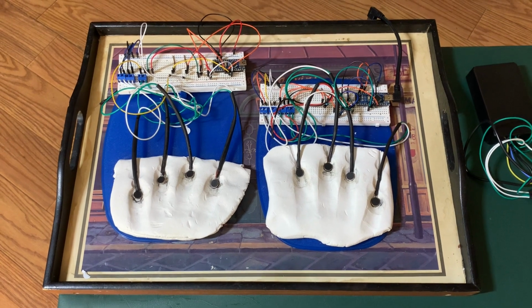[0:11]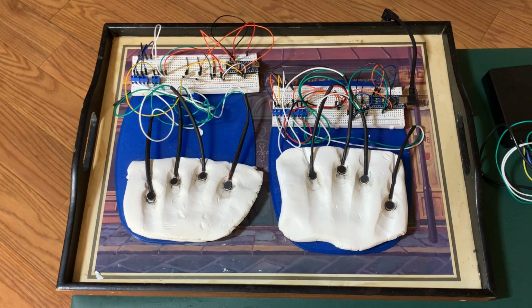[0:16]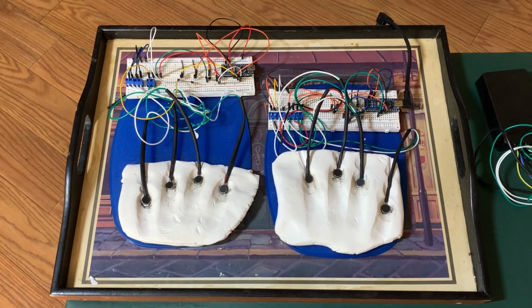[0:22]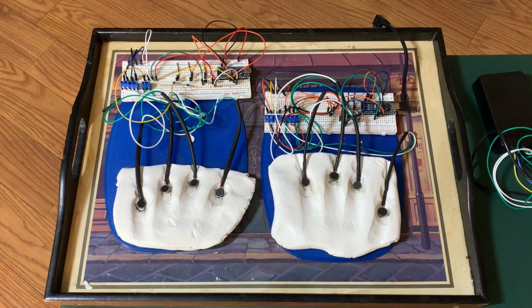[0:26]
My wife was diagnosed with Parkinson's disease approximately 4 years ago. Like many of you, we watched a Today Show piece regarding the research at Stanford University on the vibrating glove called vibrotactile therapy with great interest. Based upon this piece, I went to the Stanford University website and downloaded the research papers that had been generated regarding the creation of this capability.
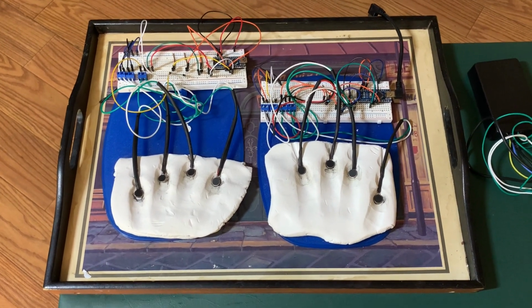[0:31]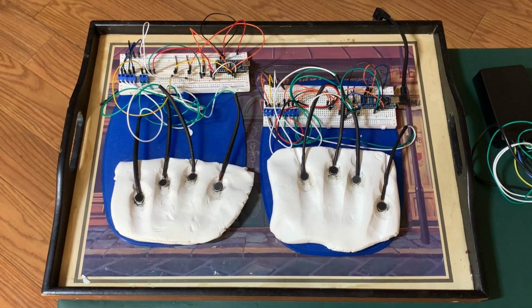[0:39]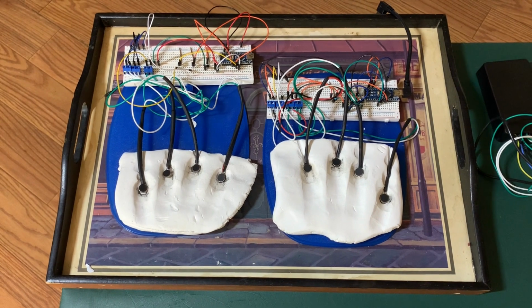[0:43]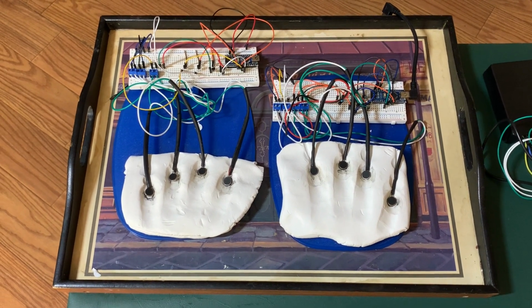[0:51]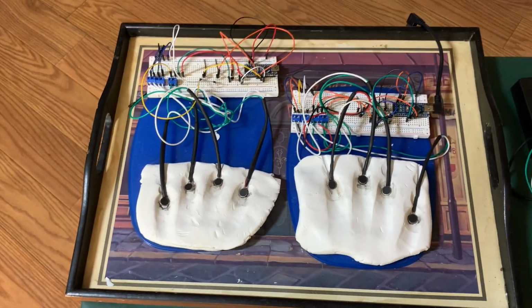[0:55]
From the paper, I reached out to the manufacturer of the components that were used in the study and found it was about $8,500 to put together the components of a vibrating glove that they had used. That seemed like a good bit of money for something that was highly experimental, and I wasn't sure of the results, so I embarked to try to build one of these myself. This is my very first attempt.
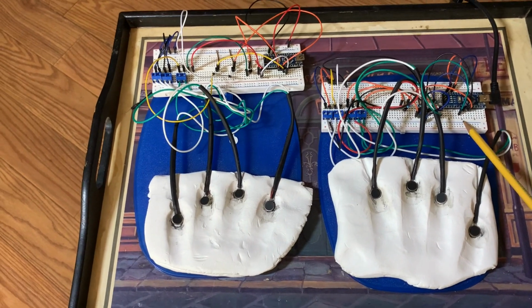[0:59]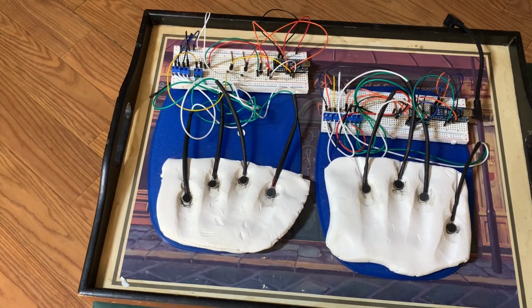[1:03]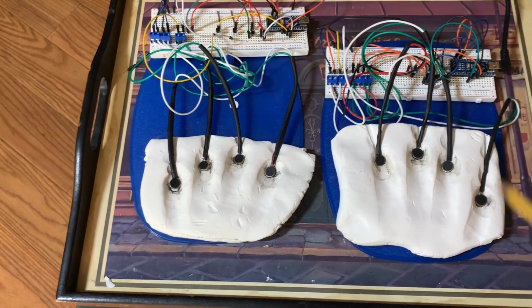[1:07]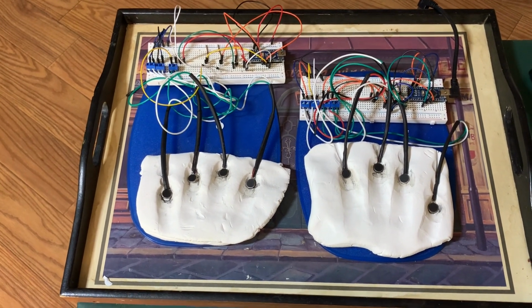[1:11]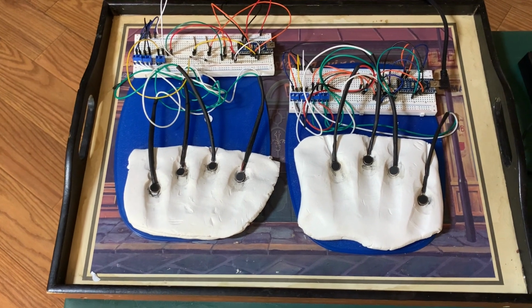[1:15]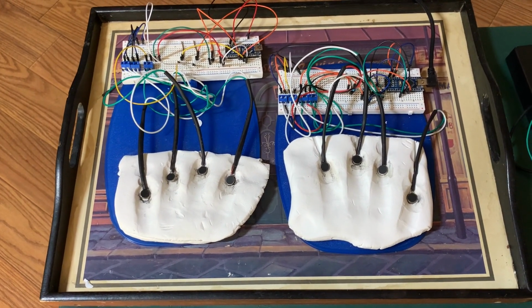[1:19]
The white pieces that you see are called a breadboard. It is a means of putting together a circuit with components. This is the processor. It's called an Arduino. It is a very small computer that is purpose-built specifically for controlling things like motors, lights, etc. We found great efficacy on this. My PD partner had some relief of both motor and non-motor symptoms.
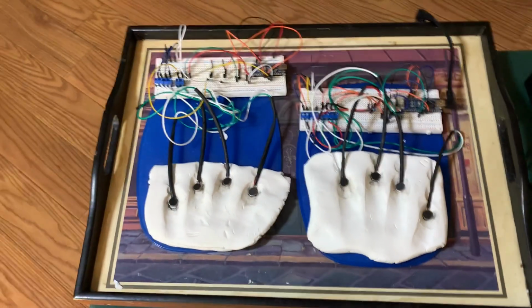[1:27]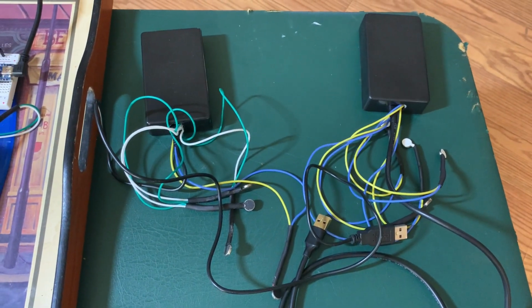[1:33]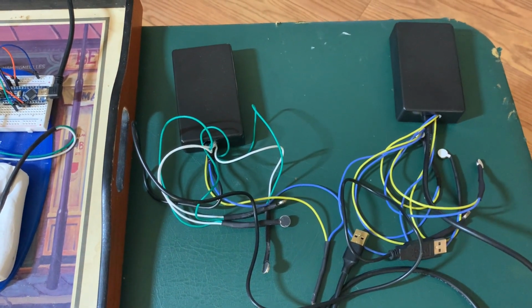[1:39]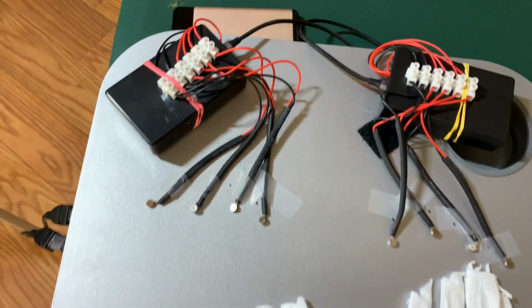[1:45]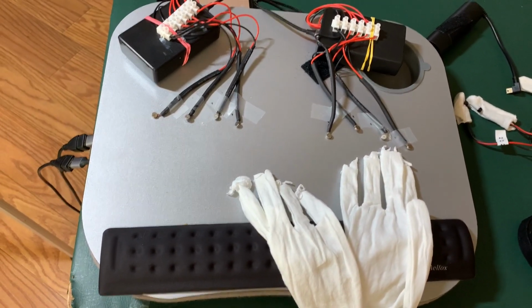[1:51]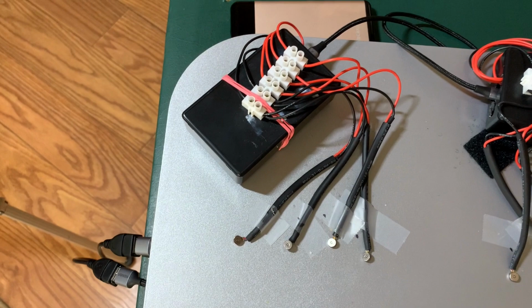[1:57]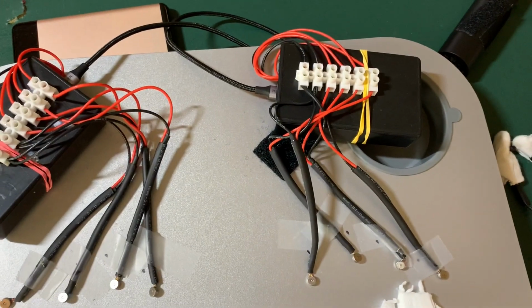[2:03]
Based upon the success of this, I then built these two components to replace the breadboards on the previous. This required a good bit of soldering, and there are solder breadboards with the Arduino contained within. The next iteration was this that we fondly call the buzz board because it buzzes when it runs. These black boxes contain the solder breadboard. I added these terminal blocks so that I could change out the fingers easily. And I did design this with one per hand because I was working on building a set of gloves.
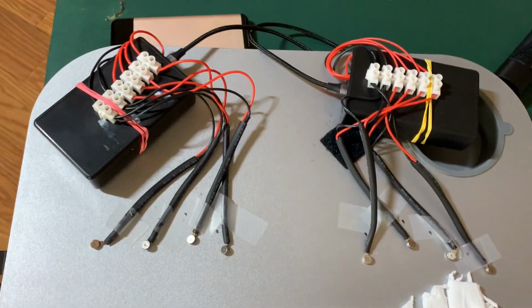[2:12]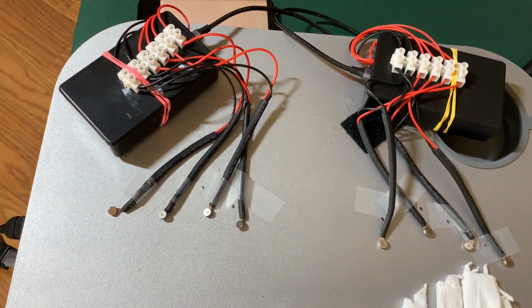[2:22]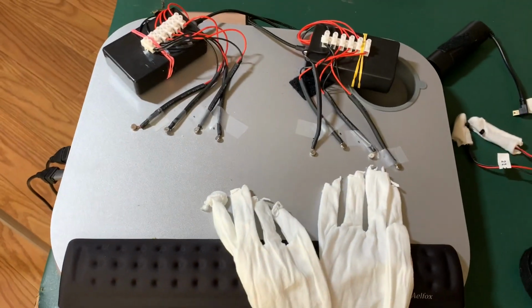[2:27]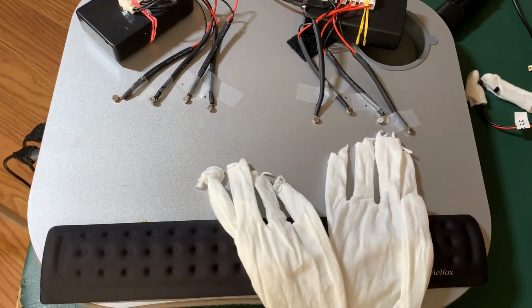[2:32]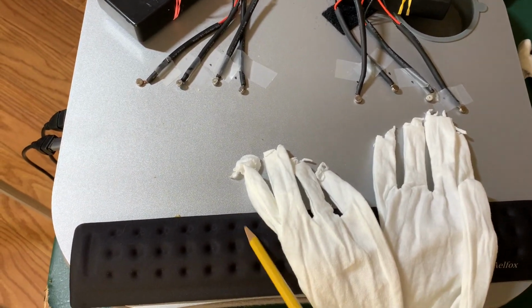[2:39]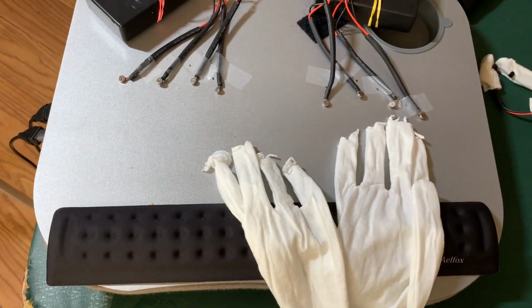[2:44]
A note, the fingers are actually what's called a piezo motor. It is the same vibrating motor that makes your cell phone, your pager, etc. vibrate. One note on this, this is built on a lap desk that I got from Amazon. The one side effect that she did report was having used this for a period of time, she found that her fingers got cold. We put in the wrist rest for comfort and just a set of cotton gloves with the tips of the fingers cut off in order to keep her hands warm through the process.
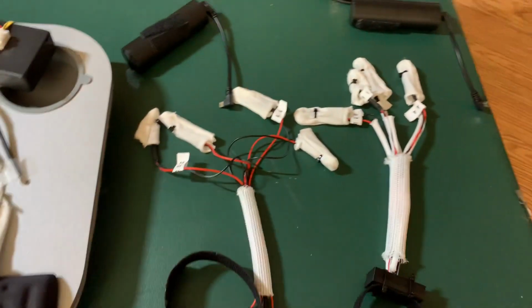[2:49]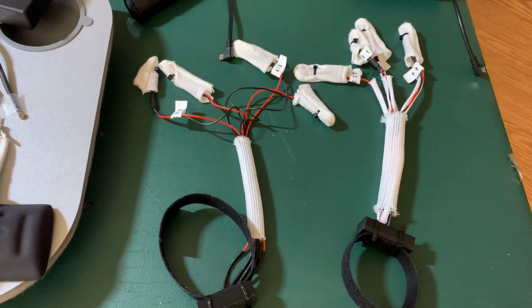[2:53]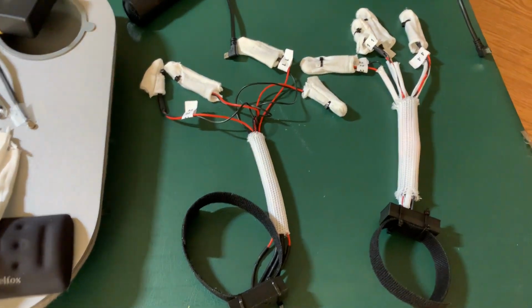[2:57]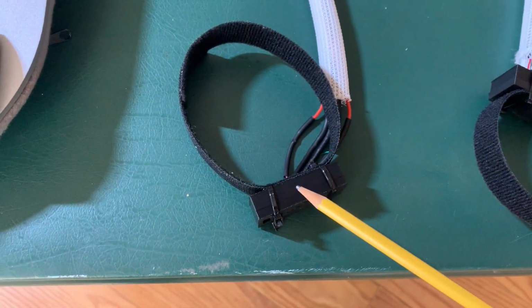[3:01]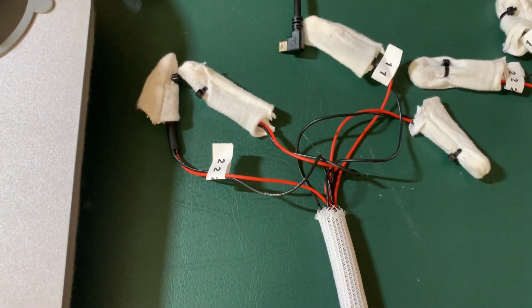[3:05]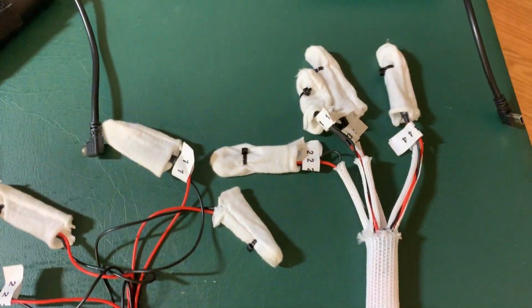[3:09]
And then finally, this is the set of gloves. There is a right and a, well, two gloves. You can put them either side. I further miniaturized. The Arduino component is in this box, wristband, and the fingers enclosed in these finger cots are the same as the fingers here, so they have the same motors.
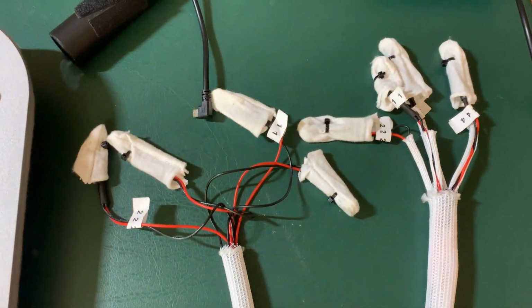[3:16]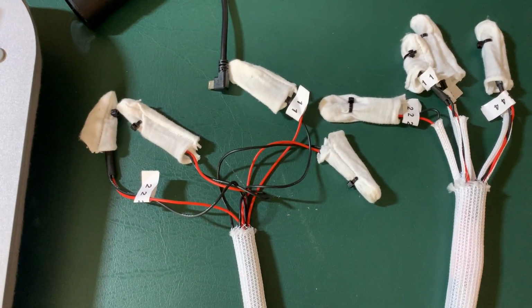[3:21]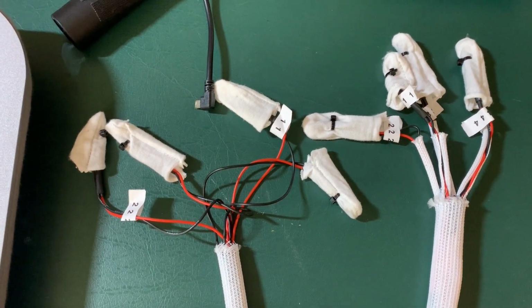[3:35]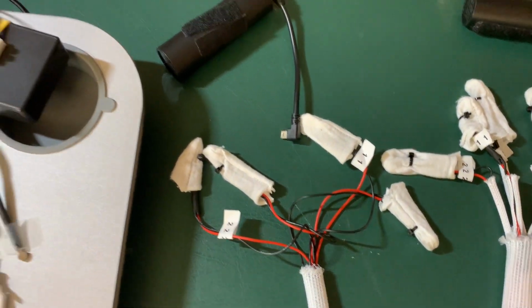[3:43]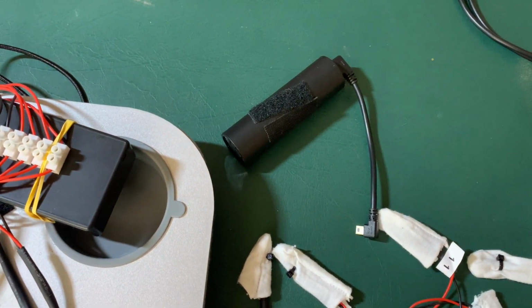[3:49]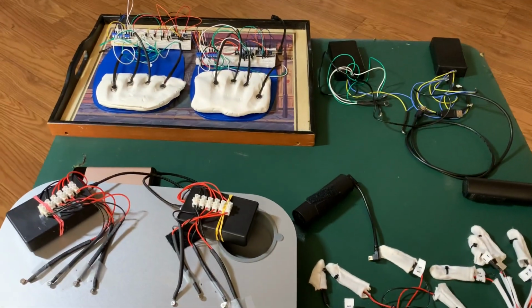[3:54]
The original ones I built, and we'll see how this is done, I used some inexpensive motors from Amazon, about 50 cents a piece. They have a slightly lower frequency than the ones used by Stanford. I then upgraded to ones that are at the frequency of Stanford or industrial, but they went from about 50 cents a piece to $4 a piece. We have not seen a change in the efficacy based upon those, but your mileage may vary. So that's the history. This, by the way, is just a cell phone battery pack from Walmart that we use to power these. So that is the history of the road that I've walked.
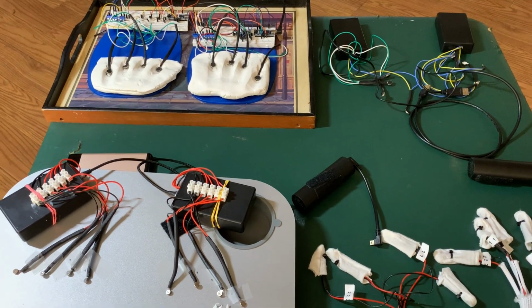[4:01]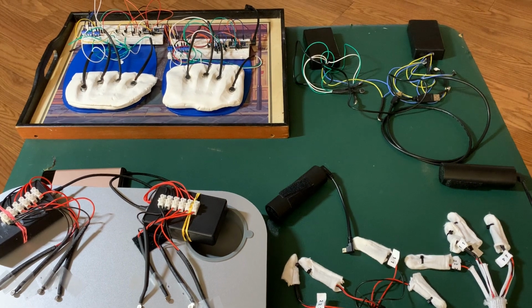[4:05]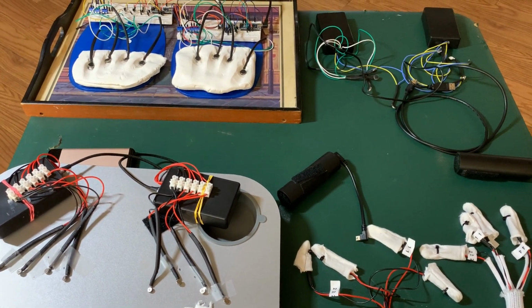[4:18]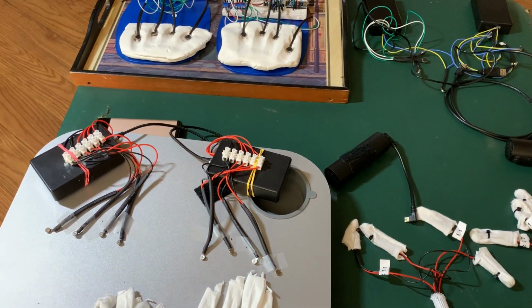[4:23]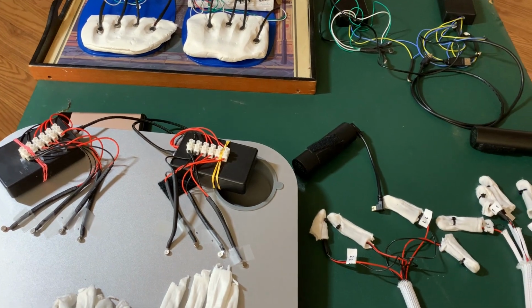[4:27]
A couple of notes. This is an experiment that I've embarked on. Your mileage may vary, no warranty express or implied. I am not a healthcare professional. I am not doing this as a commercial enterprise. For me, this is truly a what would Jesus do enterprise. If one person finds comfort and symptom relief from the road that I've walked with my PD partner, that will be enough. So without further ado, let's get to building.
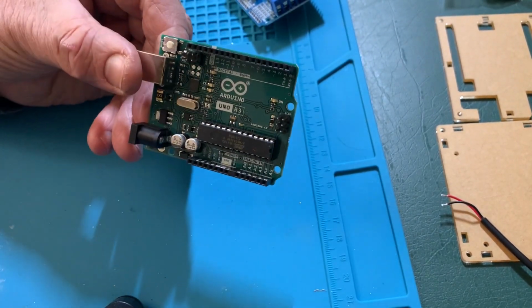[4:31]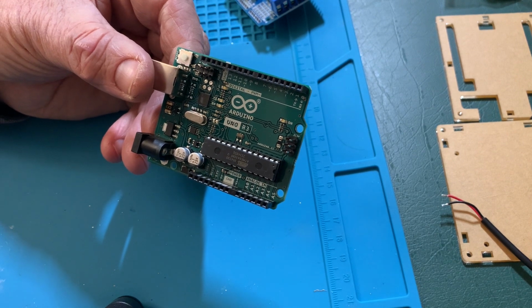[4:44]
Called an Arduino Uno. We will need a computer in order to program this. You only have to program it one time. It will remember its programming from that point forward. A note, the components that go into this are under $100. Now that does not include the cost of a soldering iron and a heat gun, etc. So if you don't have those tools, it may be a bit more.
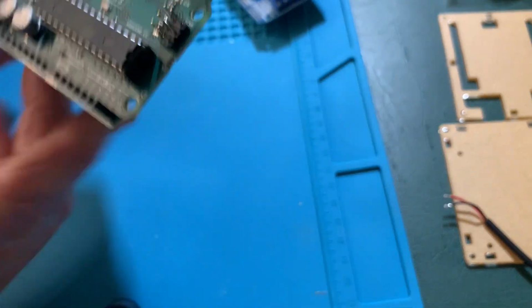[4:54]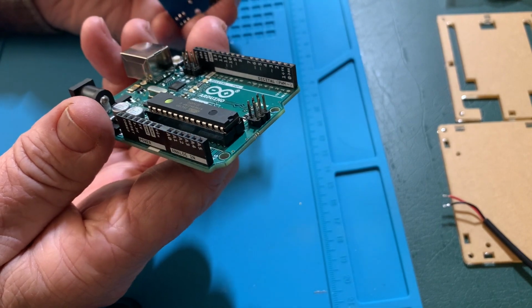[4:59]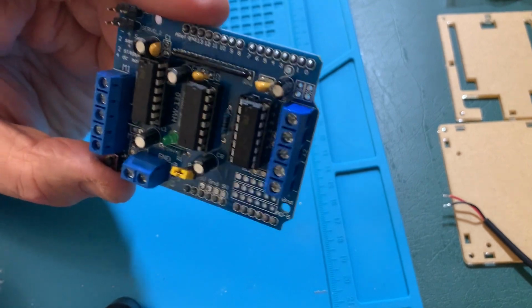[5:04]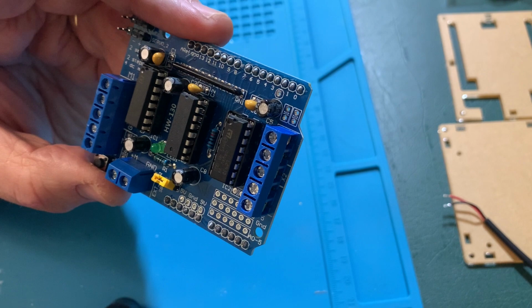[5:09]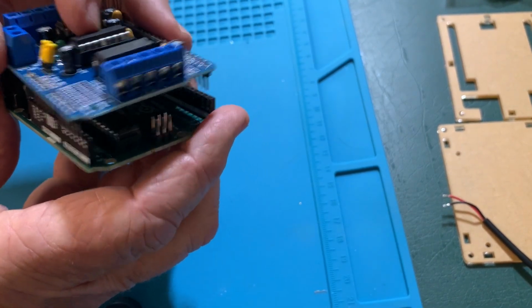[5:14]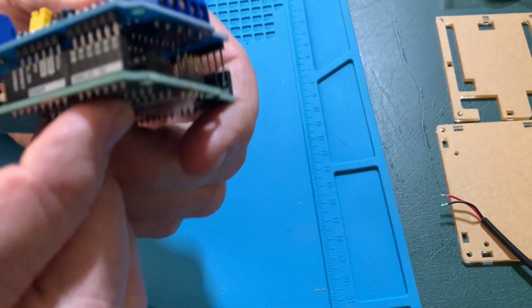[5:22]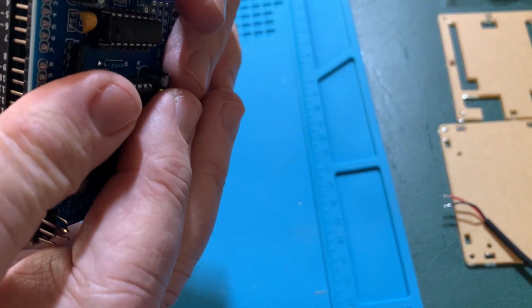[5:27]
The Arduino is designed to take what are called shields. This is a motor shield. The motor shield does what it sounds like. It drives motors. And so we are going to take these two and we're going to put one on top of the other. That's why it's called a shield. It's on top of as a protector. And we are just going to line them up. Be careful not to bend the pins. If you do bend the pins, you can bend them back. And it just clips together.
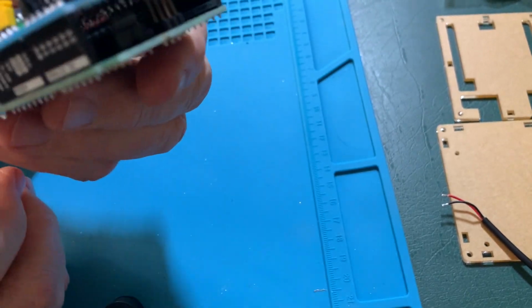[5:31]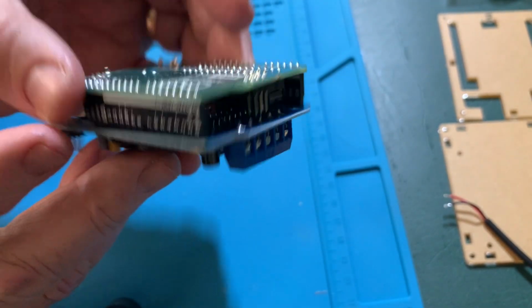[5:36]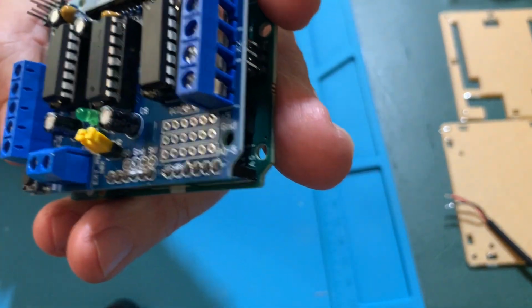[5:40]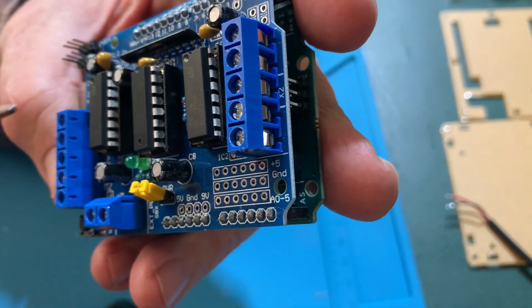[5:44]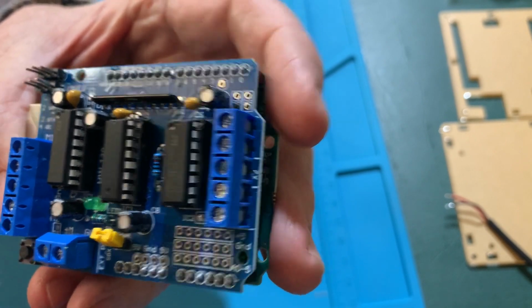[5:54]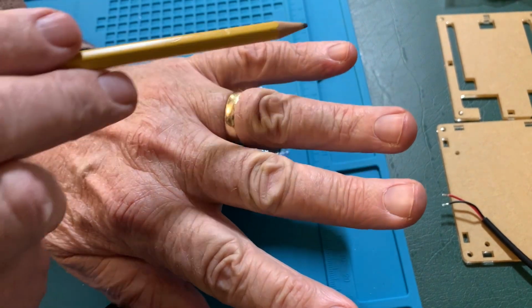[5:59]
So now you have an Arduino Uno with a motor shield. It's a bit hard to see, but there is motor 1, motor 2, motor 3, and motor 4 on the device. And those will correspond to fingers 1, 2, 3, and 4.
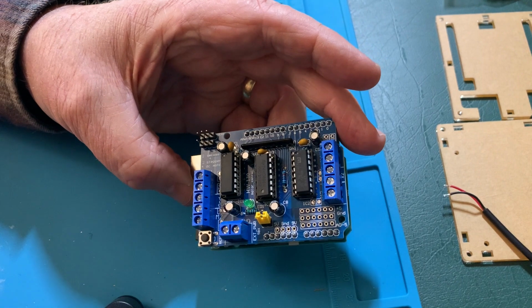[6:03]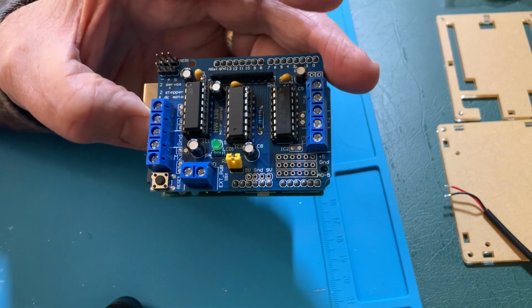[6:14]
The reason this matters is the Stanford study is specific in the pattern that they used in their study. I adhere to that. I defer to them. I say this is not my invention. It's just an instantiation of their invention.
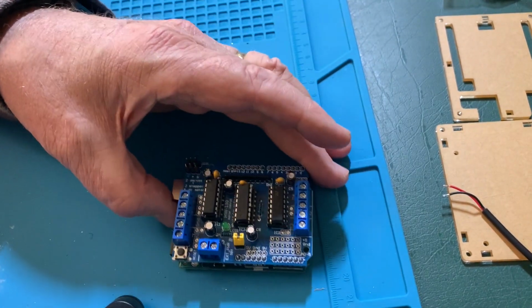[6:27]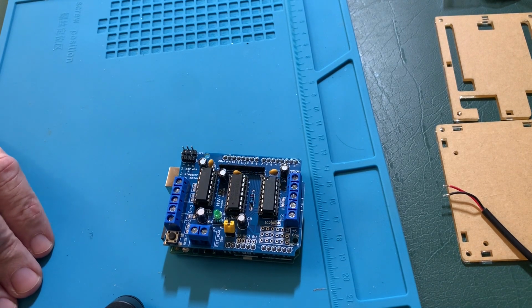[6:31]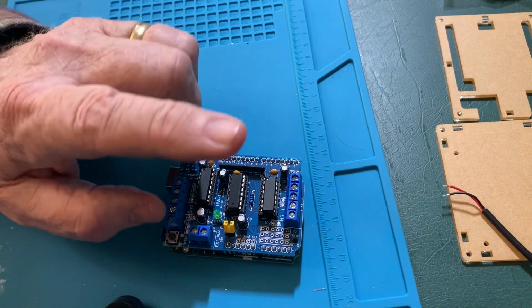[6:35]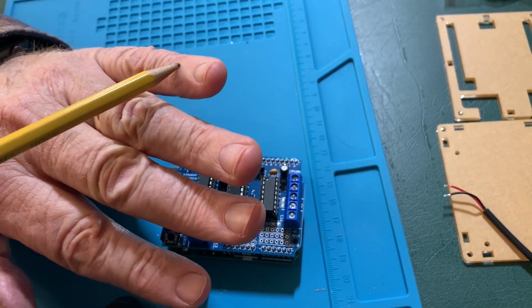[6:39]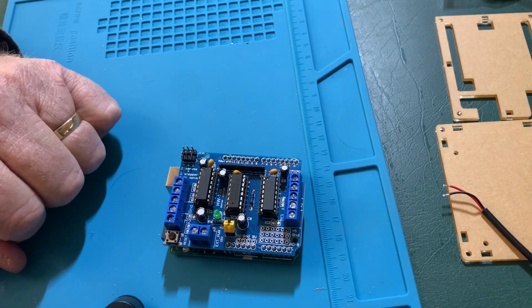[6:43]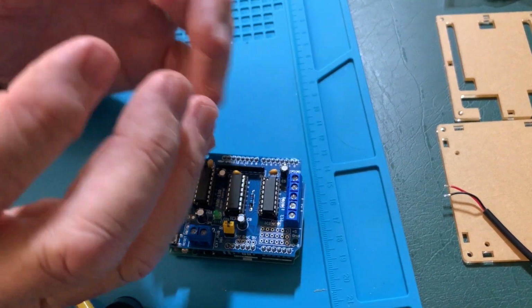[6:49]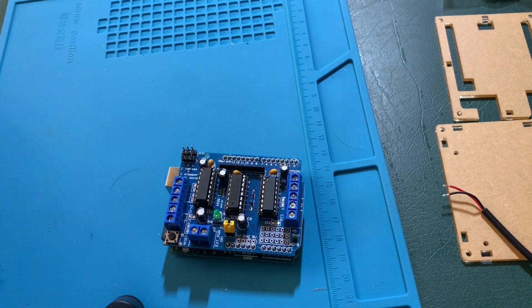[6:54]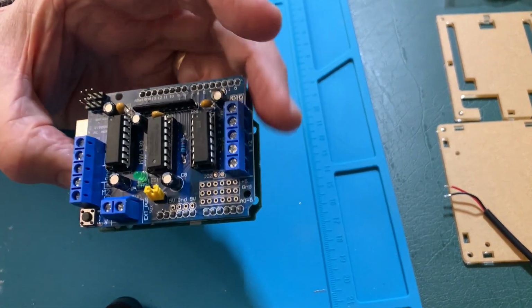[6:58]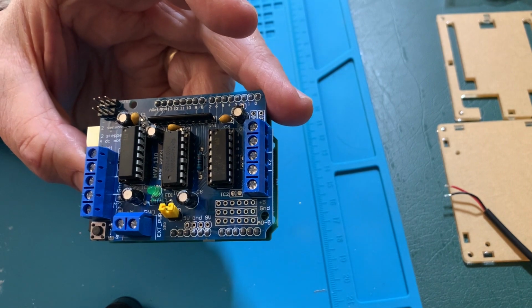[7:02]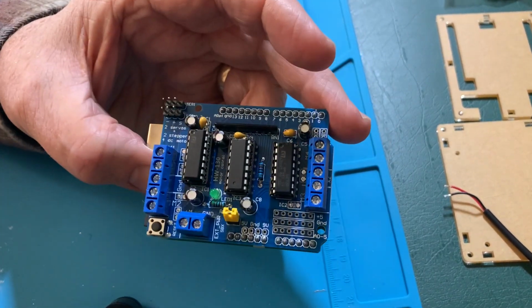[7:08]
Just a note as we're getting going here, as we started traveling down this road, we purchased a vibrating glove on the market. It provided vibration on the backs of the fingers at a steady rate. It had no impact whatsoever. We then purchased a vibrating ball that I asked her to hold with her fingertips. It had a steady pattern to it. Also seemed to have no impact. Following the Stanford design of a very specific pattern of vibration, we had both motor and non-motor symptom improvement.
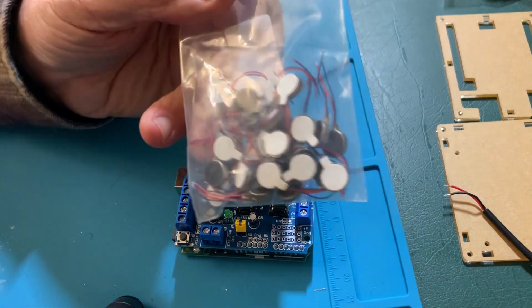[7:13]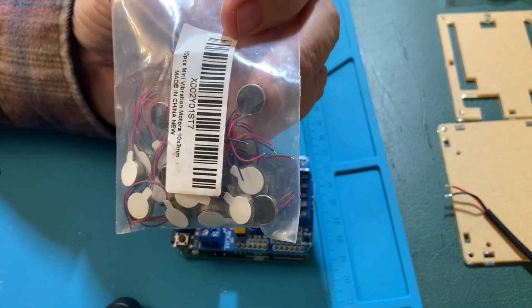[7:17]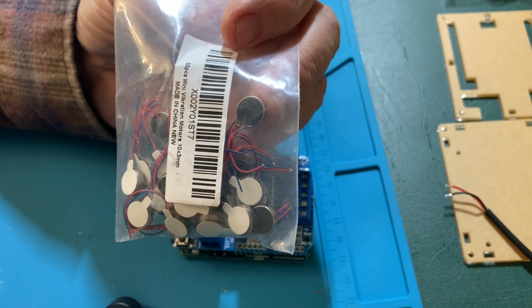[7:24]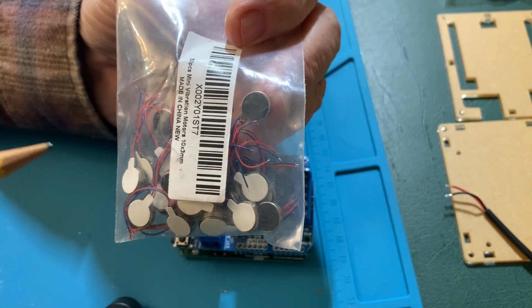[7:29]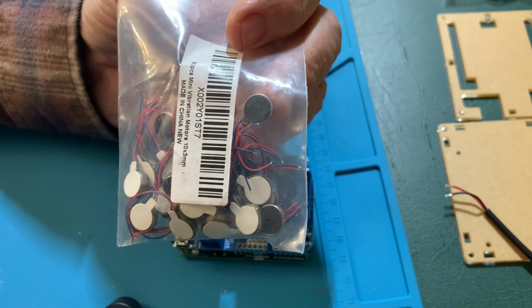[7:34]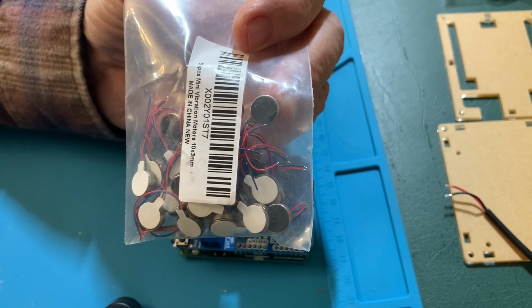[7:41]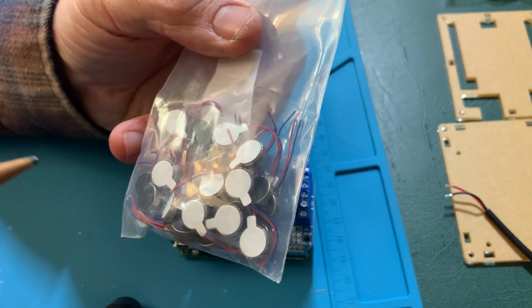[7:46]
These motors are from Amazon. They're quite inexpensive. These rotate at 12,000 rotations per minute. That is a bit below the Stanford specification. They specify 250 hertz, which equates to 15,000 rotations per minute. In the notes, I'll give a link to these, as well as the more expensive ones that do rotate at the 15,000. In our case, we have not seen a change in efficacy with either motor.
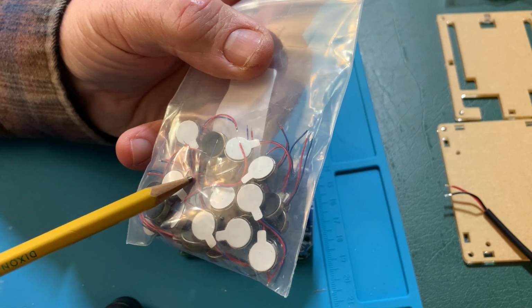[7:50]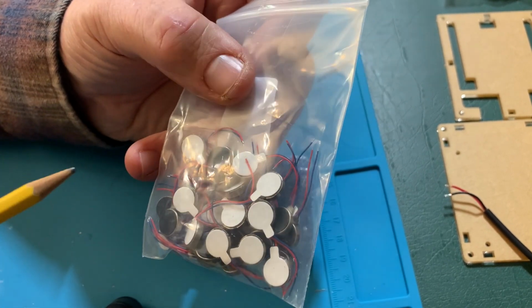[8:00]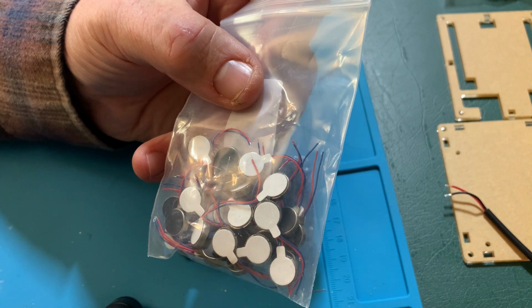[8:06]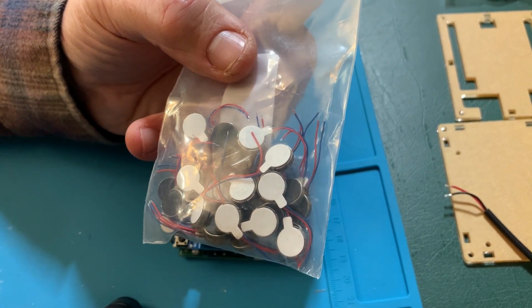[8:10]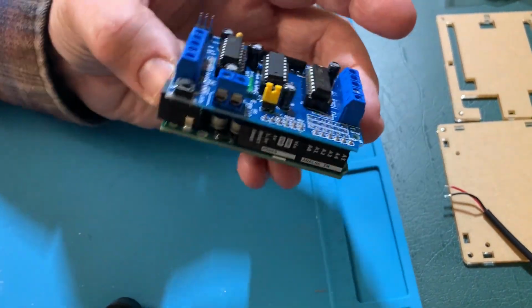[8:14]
We did early on have to replace some of these. Whether that has to do with the durability or the fact that my initial design sent too much voltage to them, I believe it's the overvolting them, but say your mileage may vary. But these are 50 cents a piece, the others are $4, so make your decisions upon how you see that going forward. I'm now going to pause and assemble the case from these pieces.
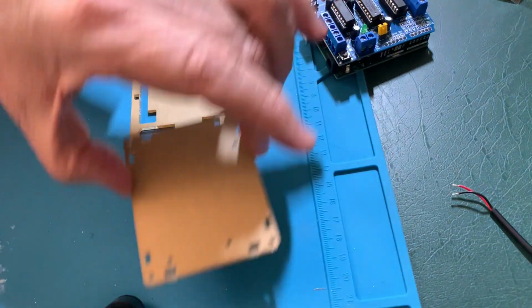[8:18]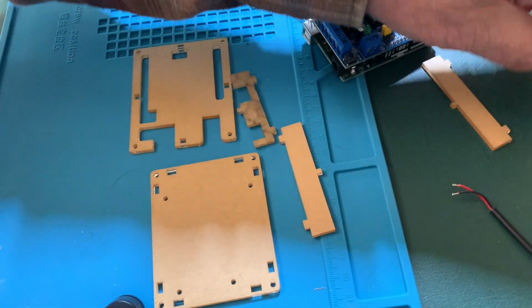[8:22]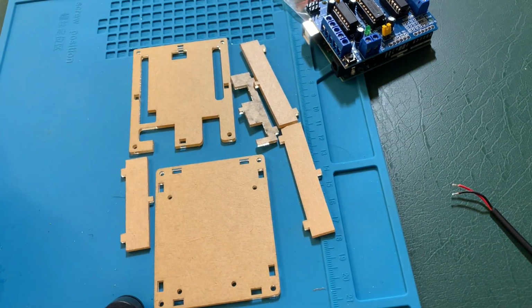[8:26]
I strongly encourage you to put your Arduino in a case, whichever one you pick. There are lots of these on the market. Some have the shield. The shield can fit inside. Some the shield goes on top, which is what this one is. Really your choice.
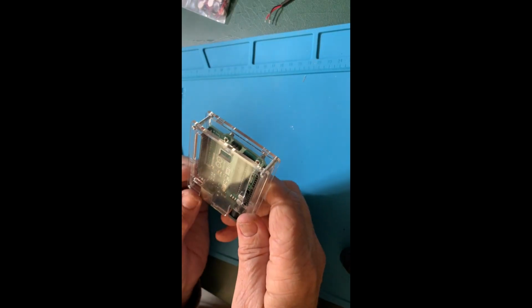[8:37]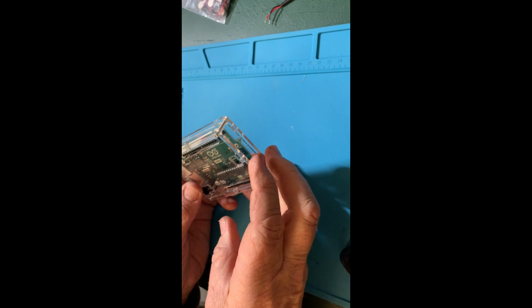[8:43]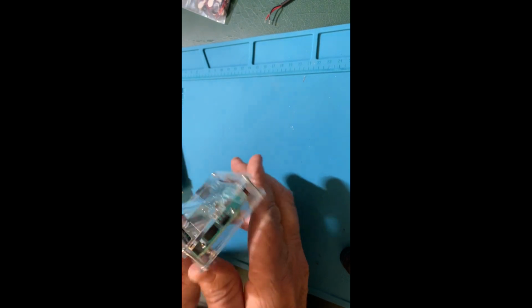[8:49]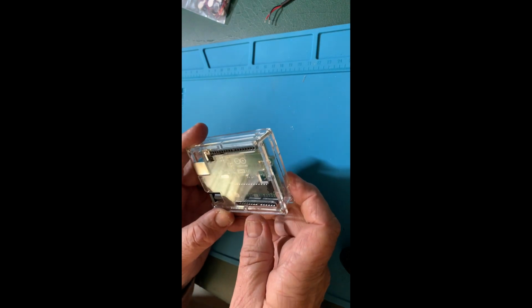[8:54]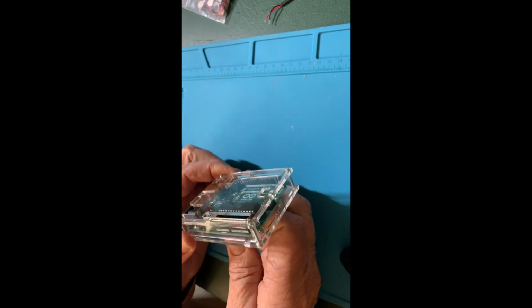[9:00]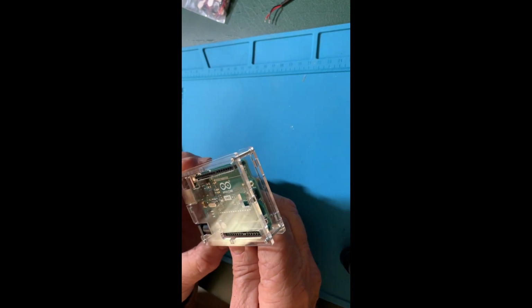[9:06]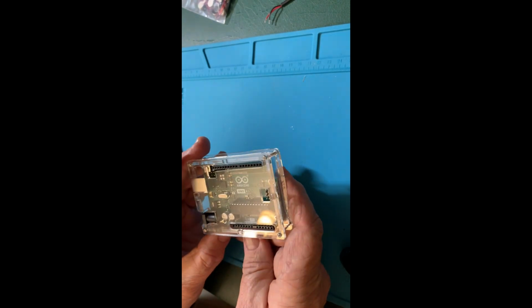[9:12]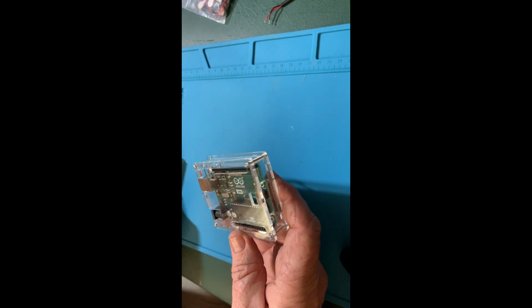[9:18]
Okay, so I peeled off the brown protective paper, assembled the case per the instructions, and now I have an Arduino Uno, technically an Uno R3, in a nice clear case. This is a nice case. I'll put the part in the attachment, but any case will do. Technically, you don't need a case for this project. I strongly advise it. If your PD partner has the kind of success and efficacy that mine has, she targets using this for an hour twice per day. The Stanford study was 2 hours twice per day, so a total of 4 hours.
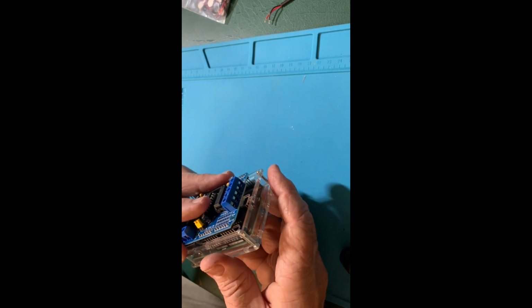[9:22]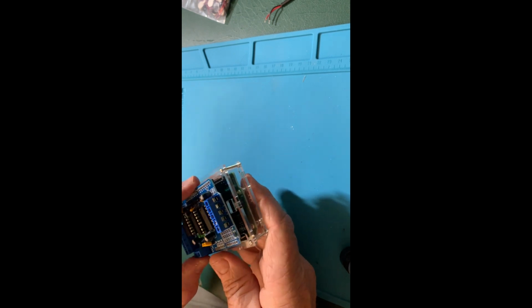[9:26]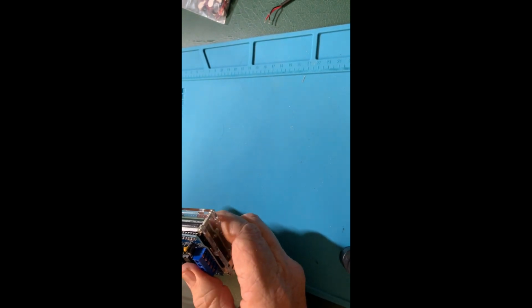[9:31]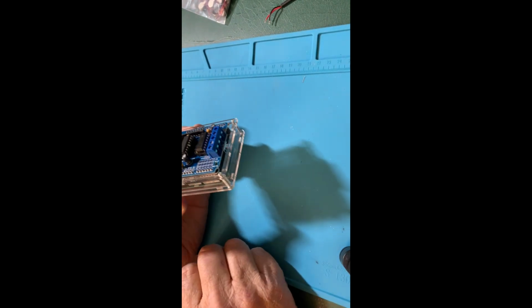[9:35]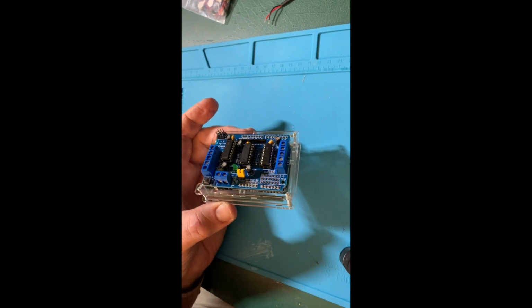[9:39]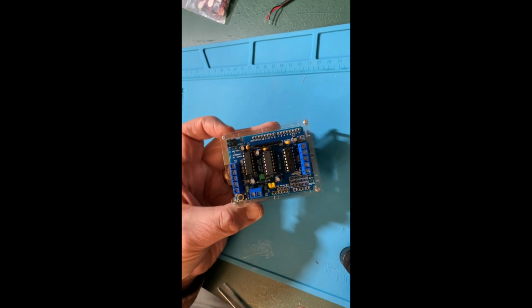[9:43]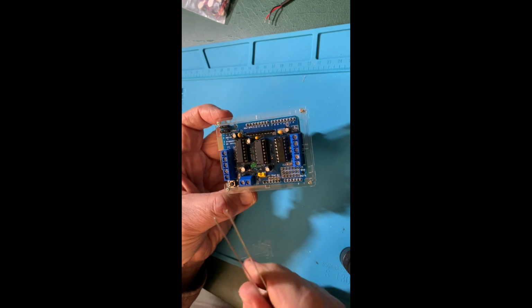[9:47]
We take our motor shield, line the pins up just as we saw before. You'll notice there's an opening in the top of the case that we can get this through and just gently squeeze it together. And we're assembled. Now, two notes. One, the nuts on this thing are quite small. The good Lord didn't build my hands for microelectronics, so I use tweezers to put the nuts on.
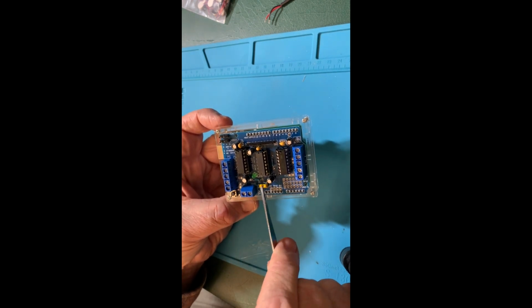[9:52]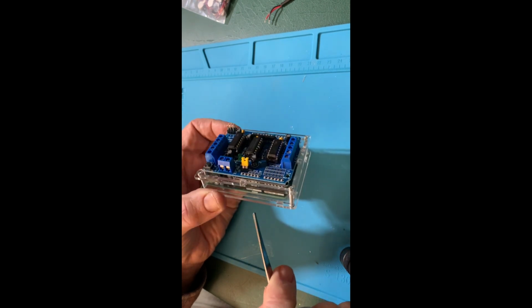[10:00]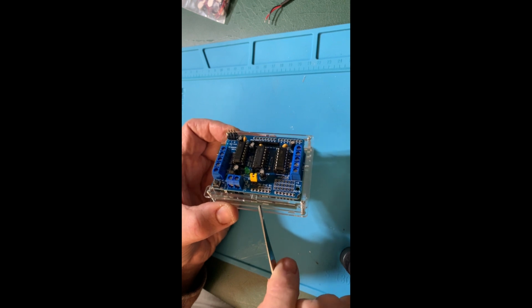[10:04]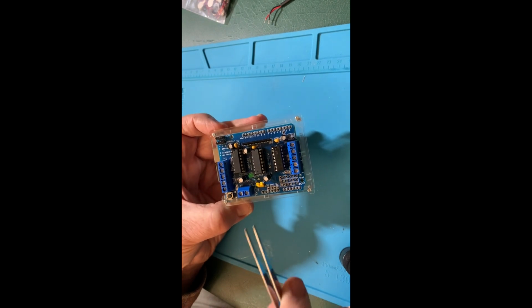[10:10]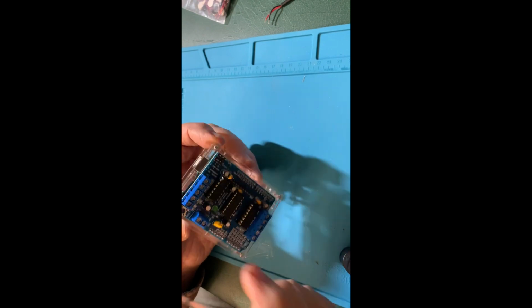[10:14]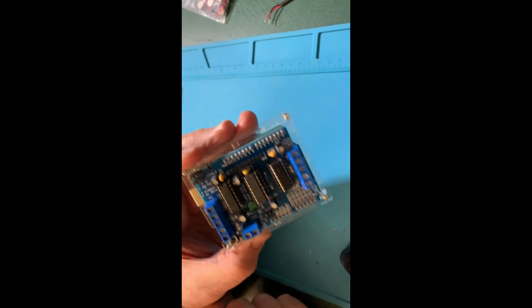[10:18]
There is a jumper right here. Yours may be yellow, maybe black or blue, a different color. This jumper allows this motor shield to pull power from the Arduino directly. Now, the issue with that is that we don't get enough power through the Arduino's power supply to drive the motors at the level we need to. So we are going to take this off. And you will not need that jumper again.
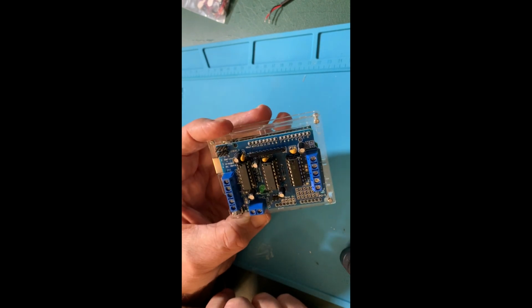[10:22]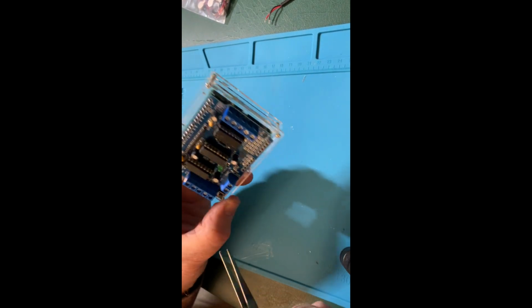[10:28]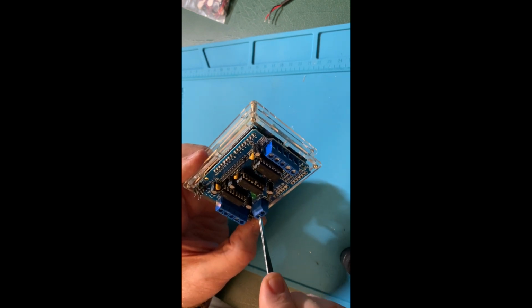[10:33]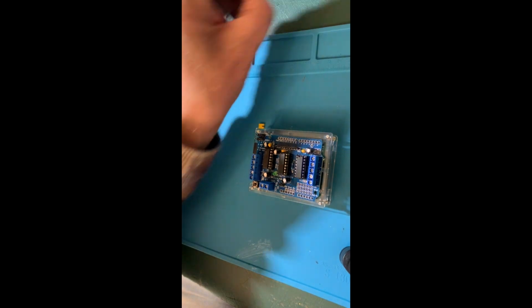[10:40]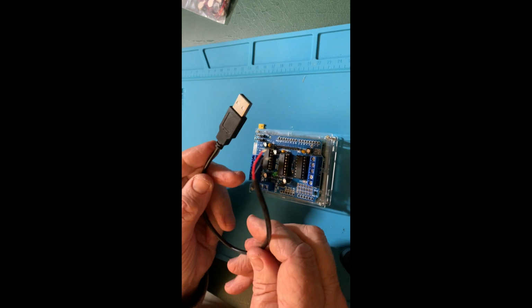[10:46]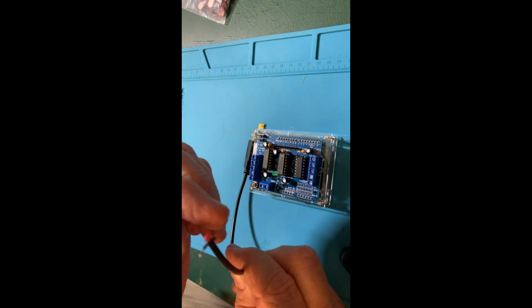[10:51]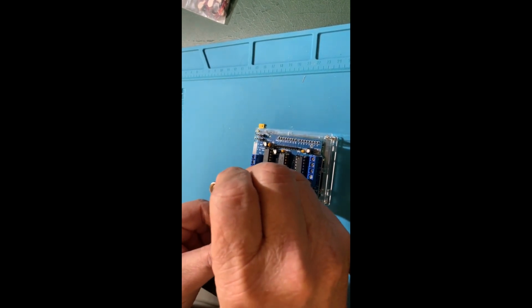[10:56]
So that means that we have to power this device. And the way we are going to do that, and let me point out right here, it says ground. So this is where we're going to attach power. Black goes to ground, red goes to M+. This is a USB cable, just a regular USB, that has just exposed wires on the end. And so we're going to put that in here.
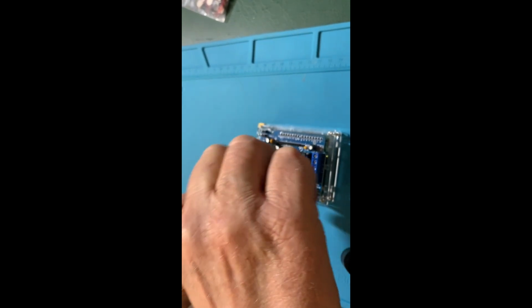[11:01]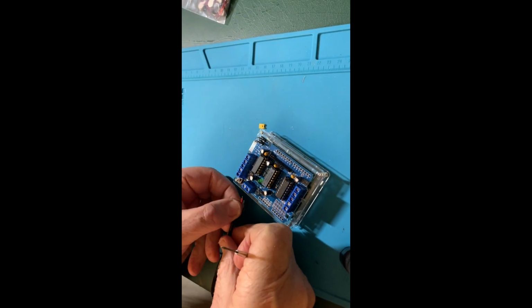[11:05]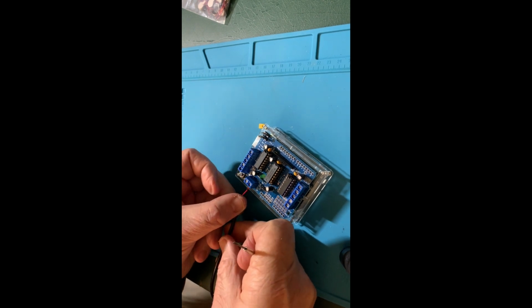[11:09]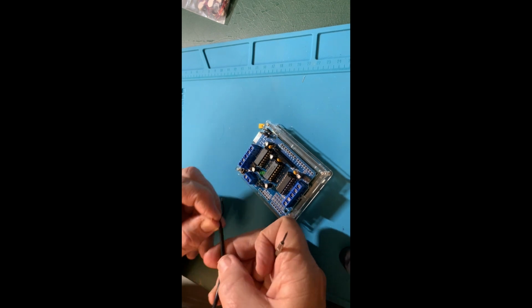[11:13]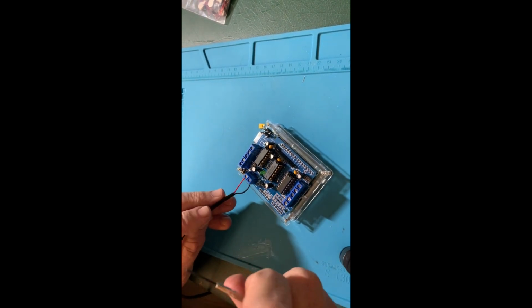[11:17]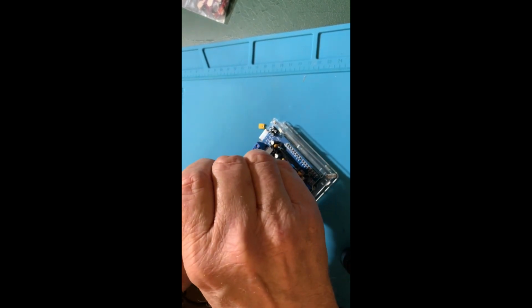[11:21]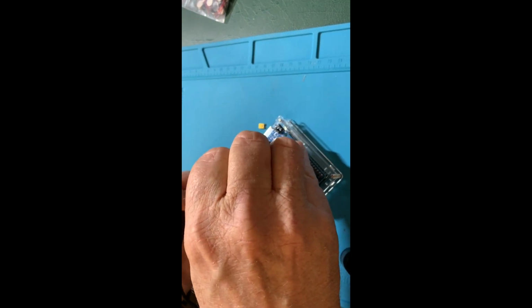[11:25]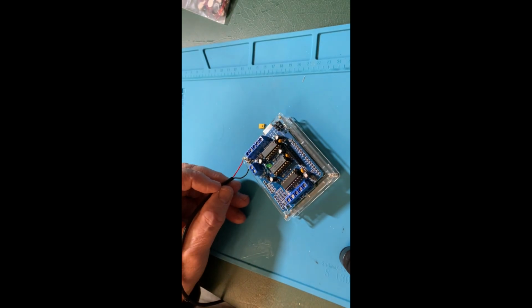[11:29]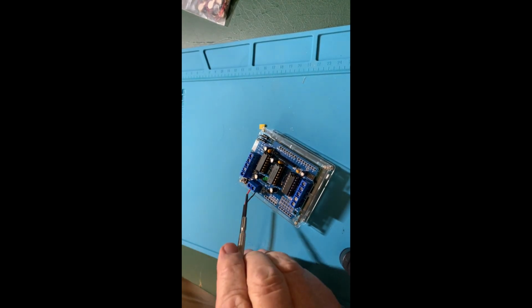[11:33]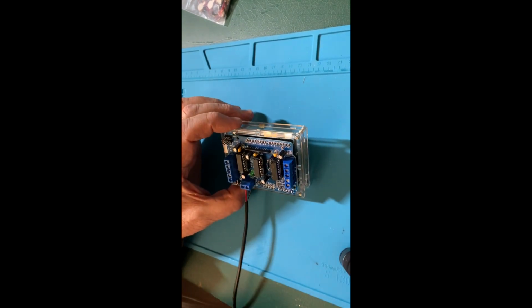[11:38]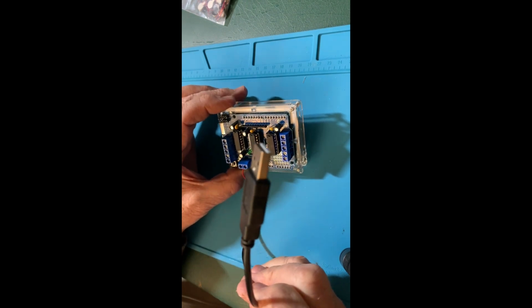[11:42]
In black to ground. So now we have our power connected. Red to the M+, black to ground, and just this little cable that gives us USB on the end. And that is how we're going to power the motors.
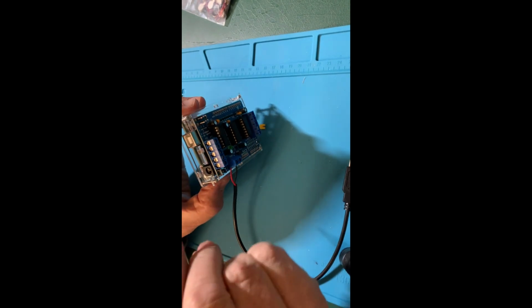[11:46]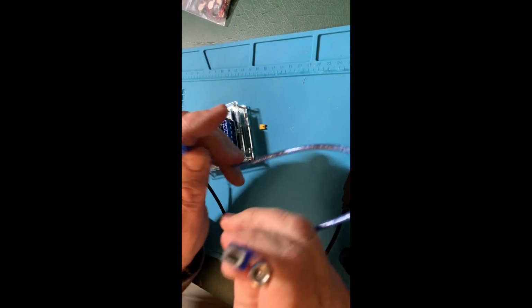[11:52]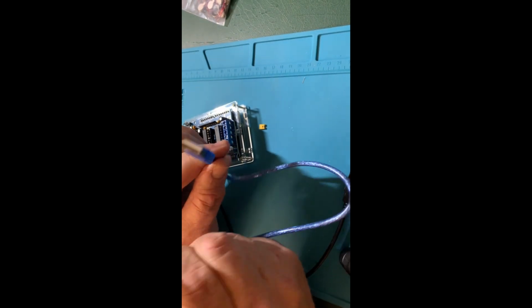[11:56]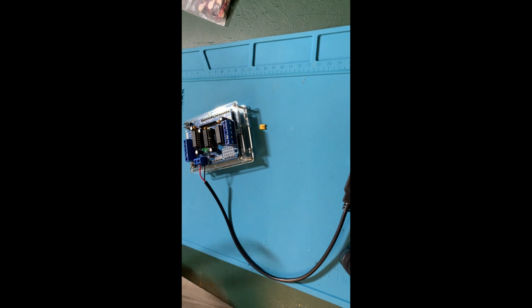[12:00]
And then we will connect the Arduino cable. This is the same one that we program it with. It's a classic USB A to B. The old style used to be on printers. This goes to the computer. This goes in for programming, and then we will use this to power the Arduino itself. So we now have a controller assembled. Let's get on to building the fingers.
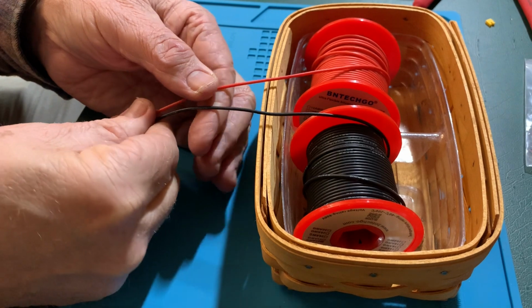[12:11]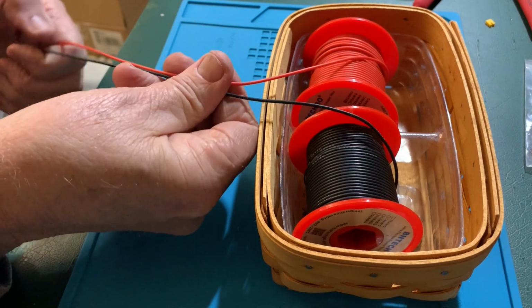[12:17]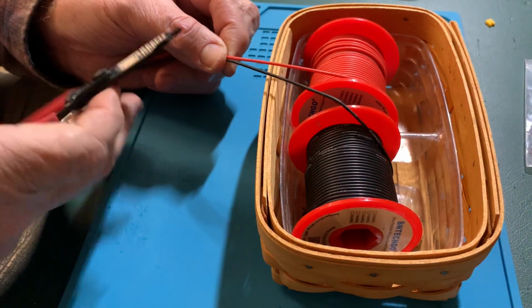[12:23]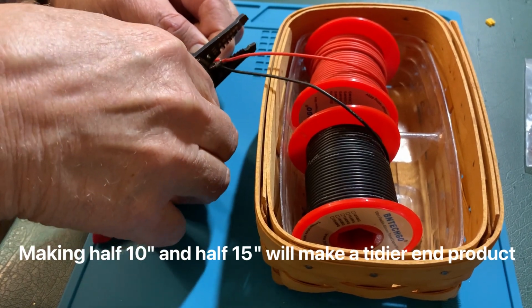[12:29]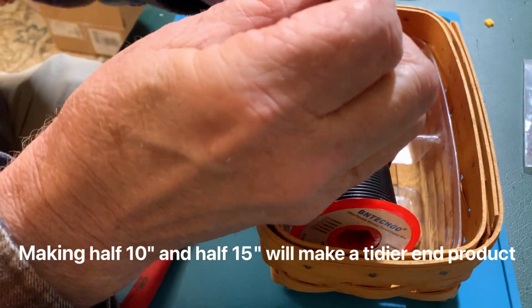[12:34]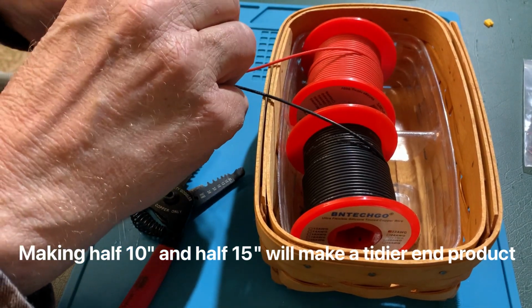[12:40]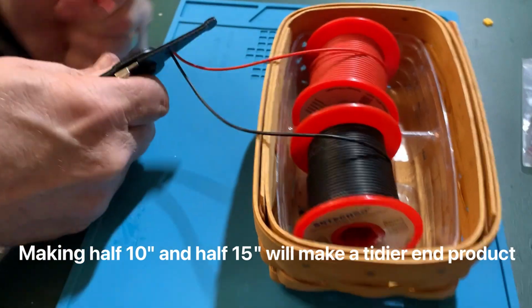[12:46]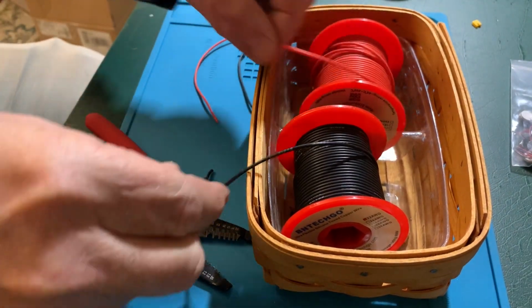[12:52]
Okay, so we are going to need wires to go from the controller to the motor for the fingers. I make these about 10 inches, somewhere around 25 centimeters. And we are going to need four because each finger is going to be driven individually on a hand. We will need a total of eight in order to build the entire board. Brief break to upgrade my wire cutters.
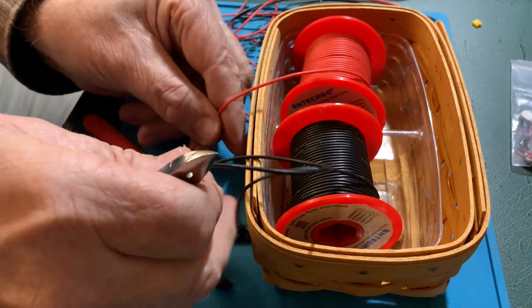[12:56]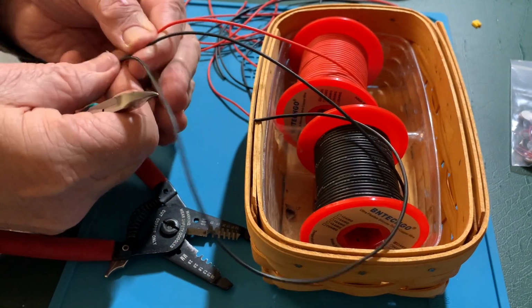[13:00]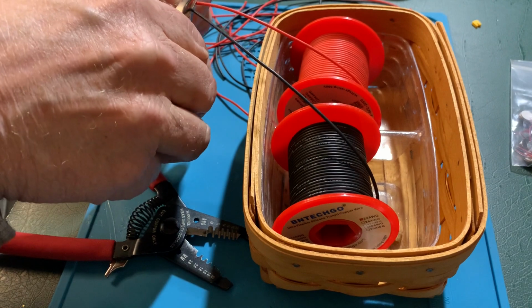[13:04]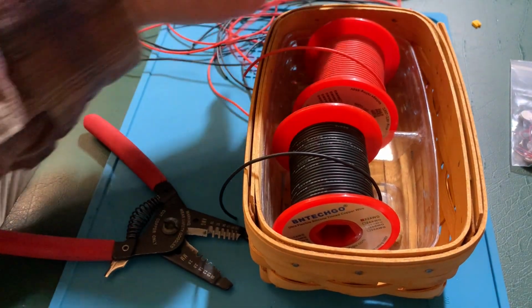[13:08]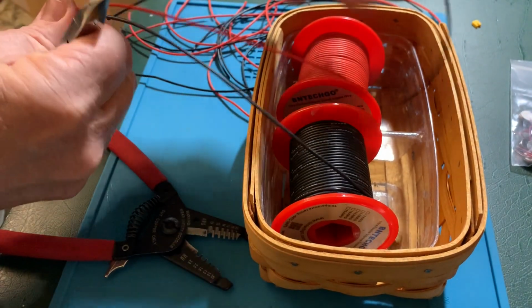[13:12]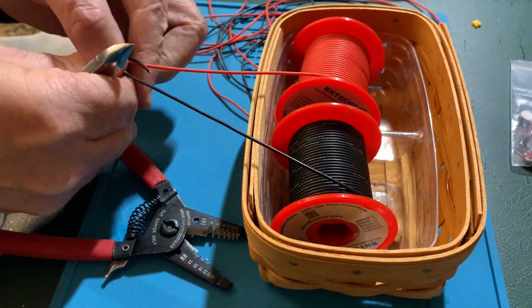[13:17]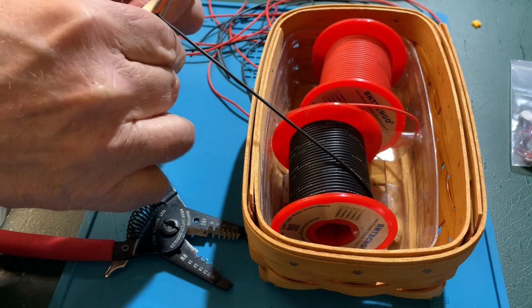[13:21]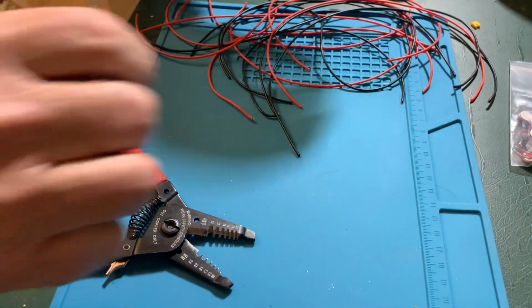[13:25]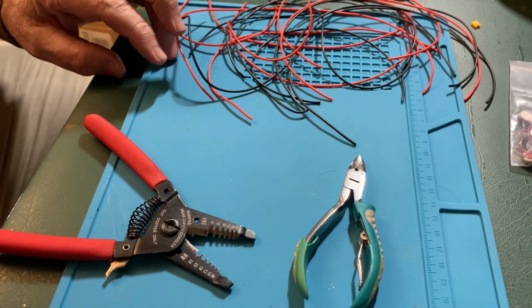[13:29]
Seven and eight. Since we're driving both hands off a single controller, and we use four fingers on each hand, a set of eight.
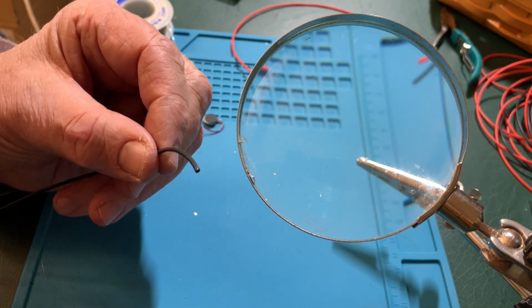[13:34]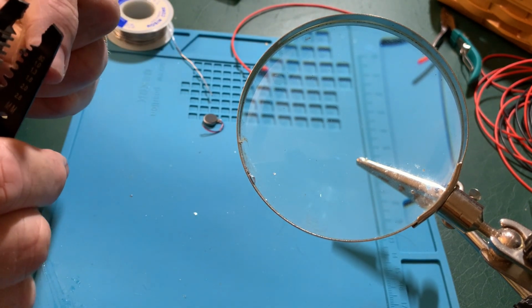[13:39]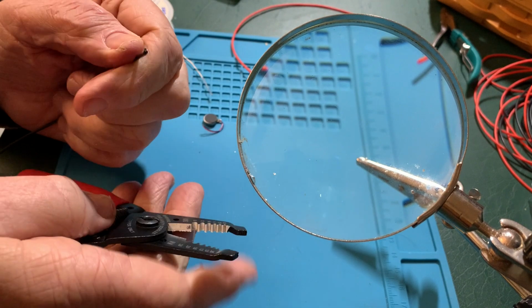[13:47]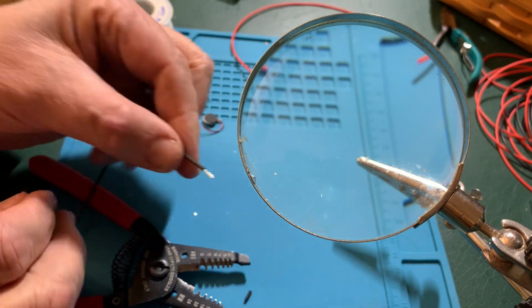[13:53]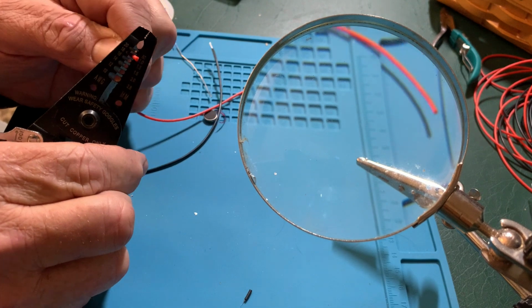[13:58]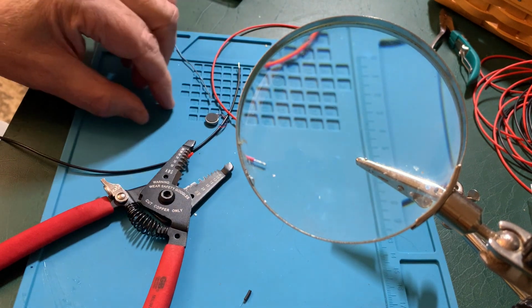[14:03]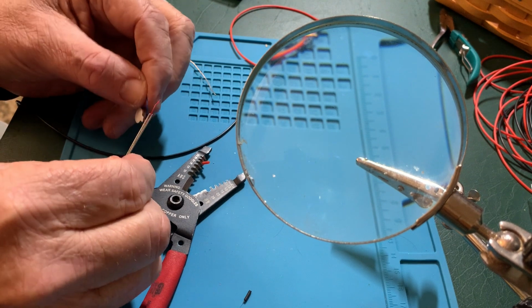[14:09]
Okay, next step is we are going to make the actual motor connections that vibrate the fingertips. I'm still working on a way to do this without having to solder, but haven't come up with one. If anybody's got an idea, I'm happy for the improvement. So I'm gonna strip the end of the wire like that. That's the black. And the red. You don't need much. And the reason you don't need much is because the motors are quite small.
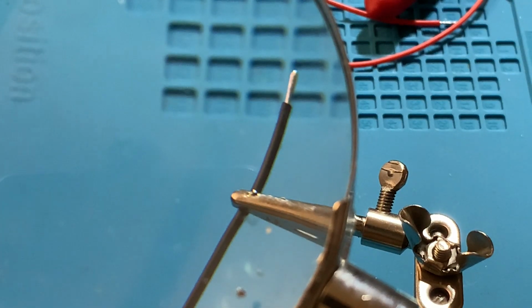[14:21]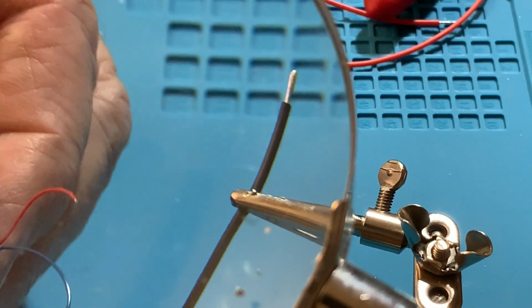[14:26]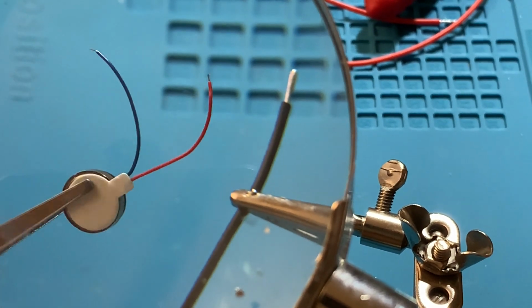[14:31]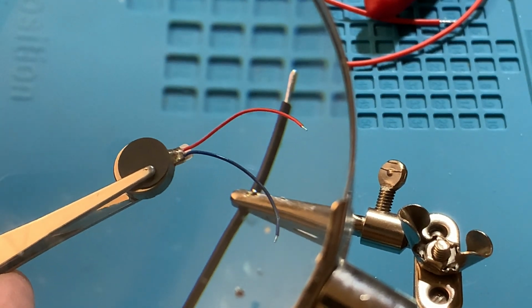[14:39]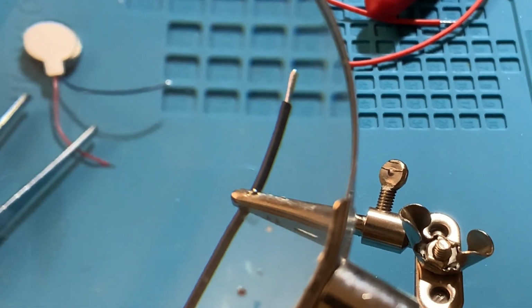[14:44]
Okay? So I am going to move the camera around so we can run this through a magnifier so you can actually see something. Okay, so you're looking through a magnifier at the end of the wire. And this is the motor. That white is paper that you peel off with an adhesive. This black circle here is the top. That's what will actually be up against the fingertip. Okay, so soldering. This is quite simple. Do not let this put you off.
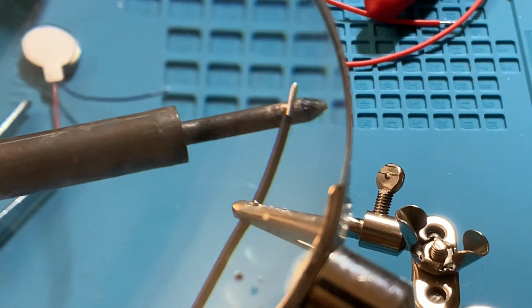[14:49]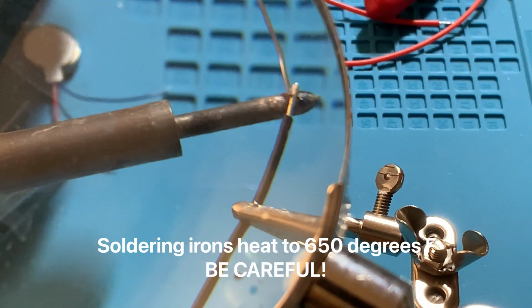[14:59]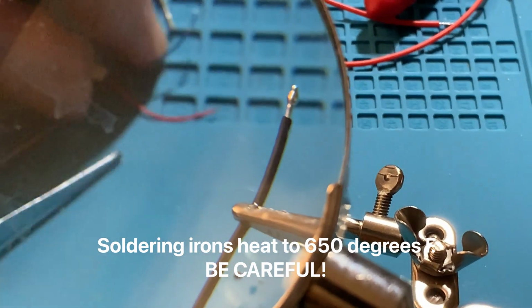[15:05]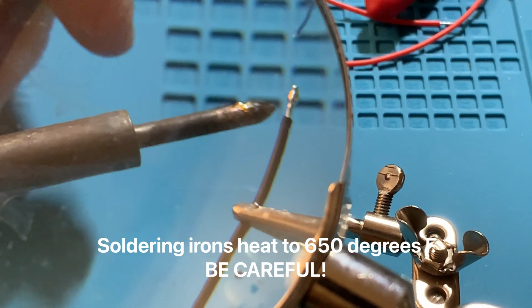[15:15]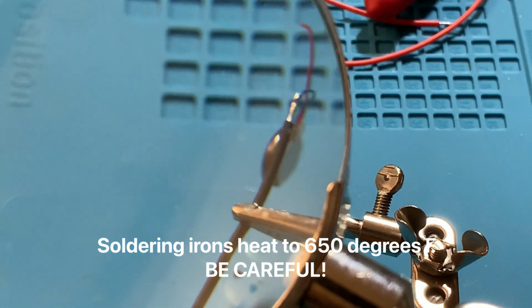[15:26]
All I'm gonna do is hold the soldering iron against the bottom of the wire, and I'm gonna hold the solder up against the top until I see the solder melt onto the wire. Okay? Now, this motor is red and blue, so blue to black, red to red. I'm gonna touch the solder again. I'm gonna hold the wire up against it, the motor. I'm gonna take the soldering iron away and hold there until it's connected, okay?
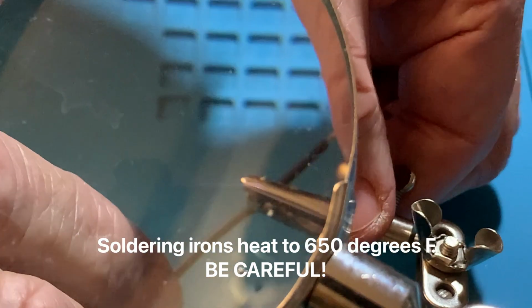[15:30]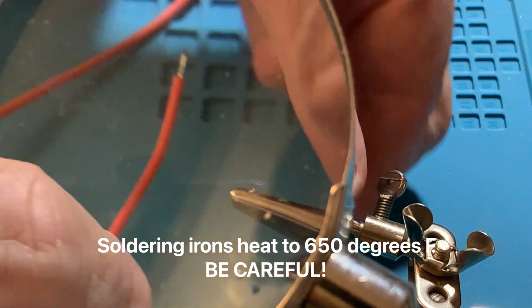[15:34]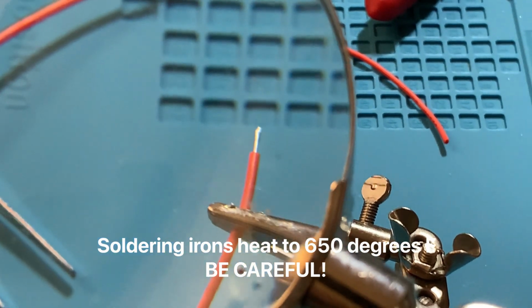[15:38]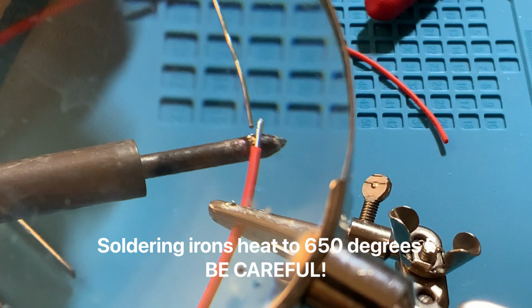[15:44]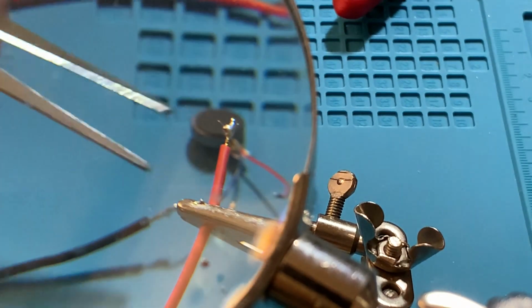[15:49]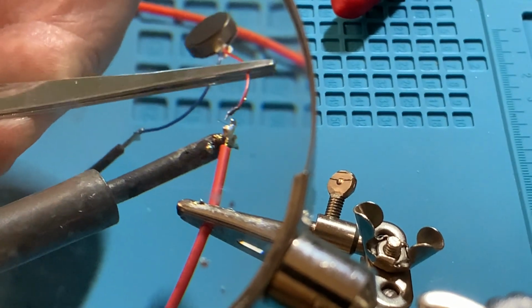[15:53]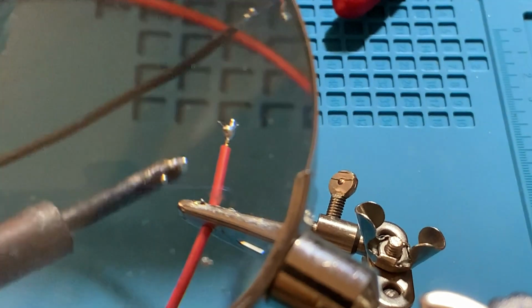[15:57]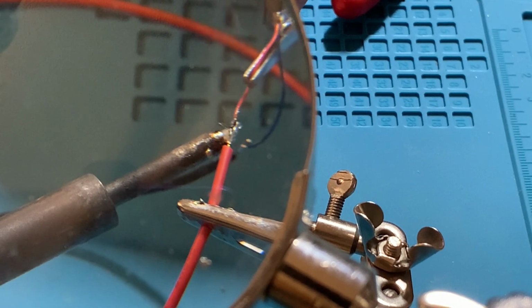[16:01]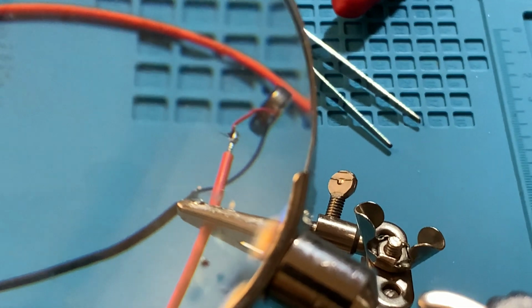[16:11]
I'm gonna take the black out. I am gonna take that red wire that I stripped previously, and I'm gonna put it in place. I'm gonna hold my soldering iron up underneath it, warm the wire up, hold the solder up against the top until we see it. Soldering iron away, wire stays in place. And voila.
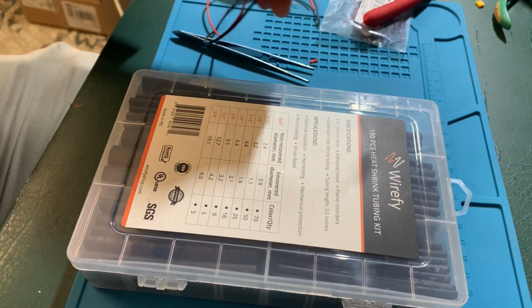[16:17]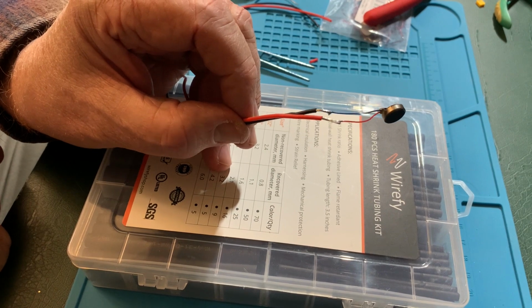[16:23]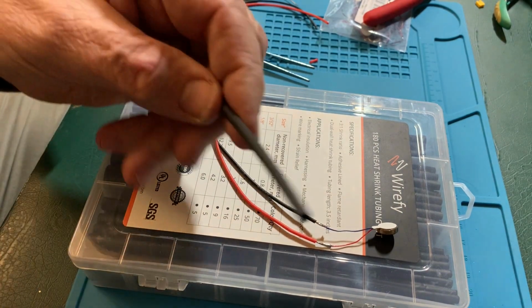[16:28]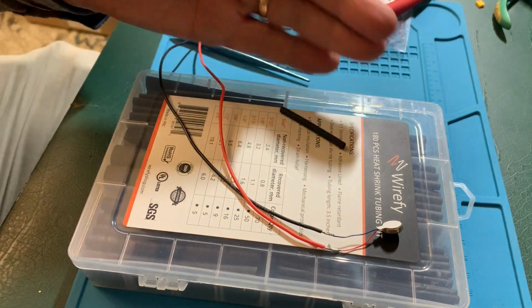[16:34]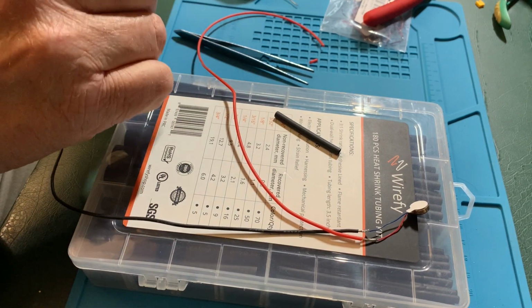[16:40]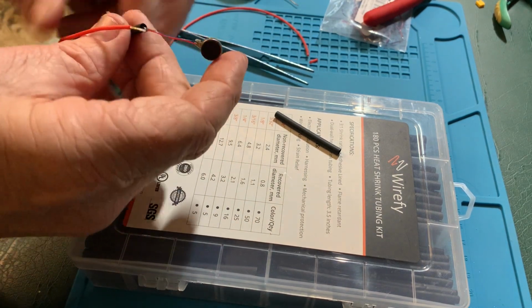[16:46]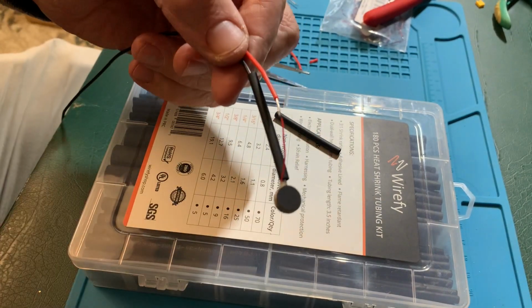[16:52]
Next step, I use heat shrink. And as you'll see, we have two connections there that are right next to each other. So there's a high probability that those are gonna short out and the motor's not gonna work. So the first thing we're gonna do is we're gonna take a piece of 1/8 inch heat shrink. I cut it in half. You don't have to. I do that so I don't have as much stiffness down toward the fingers. Gives you a little bit more flexibility in what you do. Slide it gently over that connection. And now we have a protection between the two.
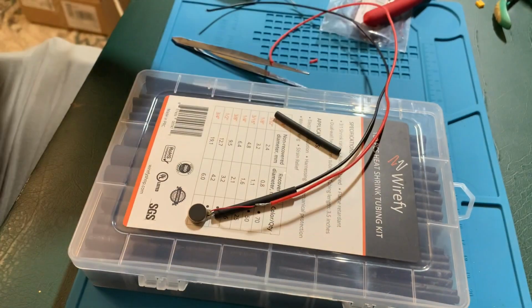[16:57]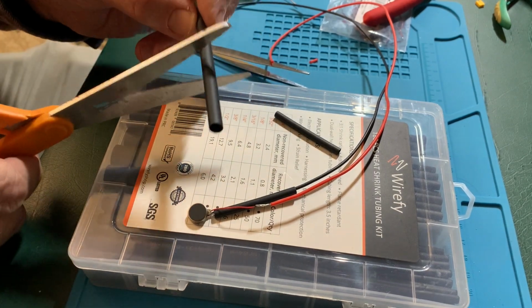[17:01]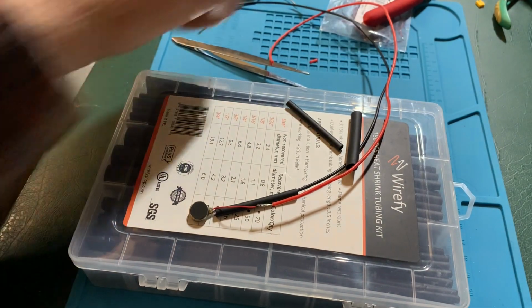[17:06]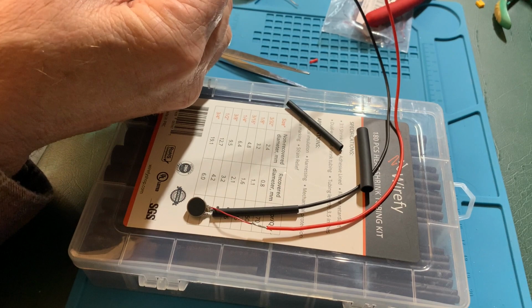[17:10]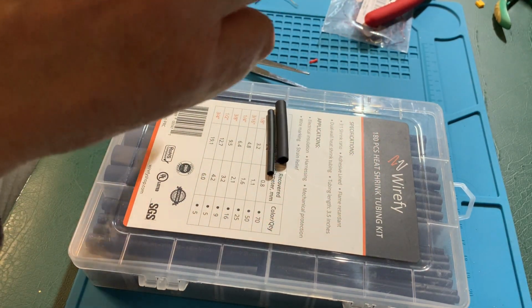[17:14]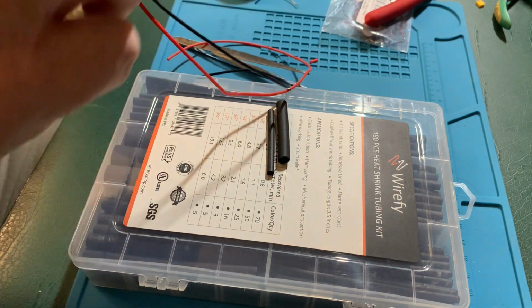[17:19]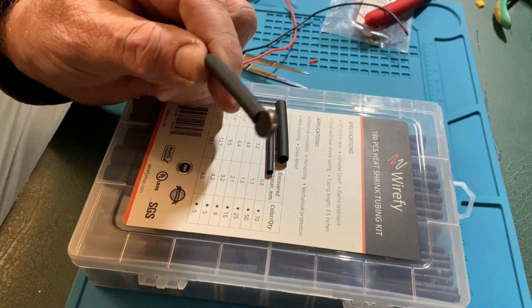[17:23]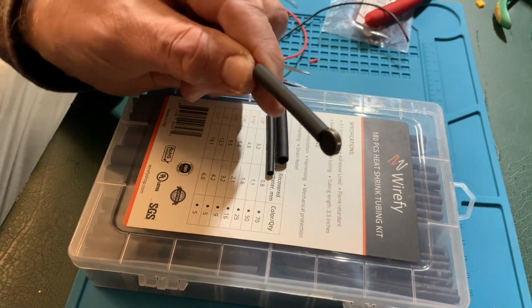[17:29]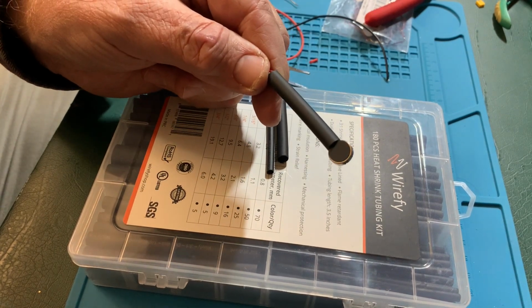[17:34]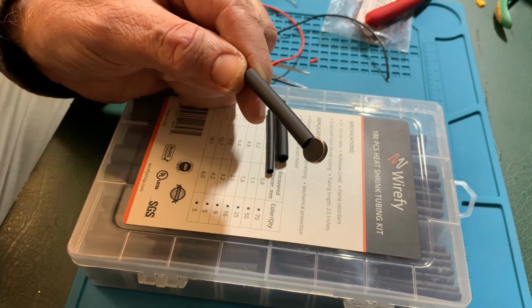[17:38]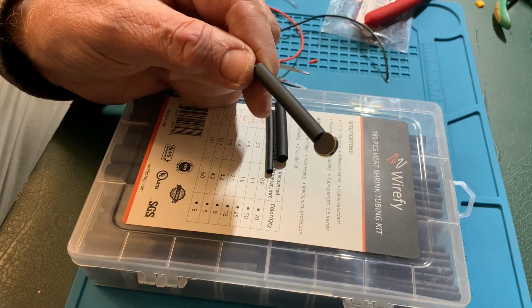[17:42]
Next step is I take a piece of 1/4 inch heat shrink and I cut it. And now I'm going to put both wires through it. And I'm going to bring it all the way down to the base of the motor. And this keeps the wires together. It makes it easier to manage. But also keep in mind that these motors were designed to be attached to a circuit board or maintained. And they're going to be relatively loose when we just mount them on the board or on a glove. So this provides some mechanical stability here. And the next step is to use a heat gun and heat shrink these down.
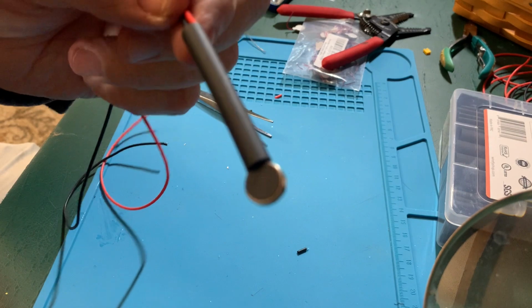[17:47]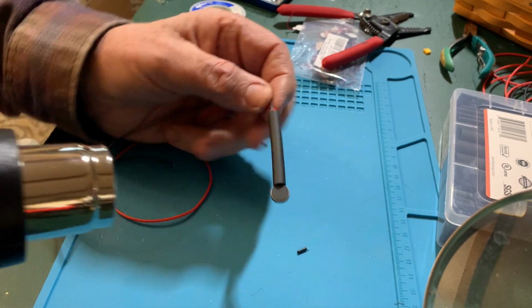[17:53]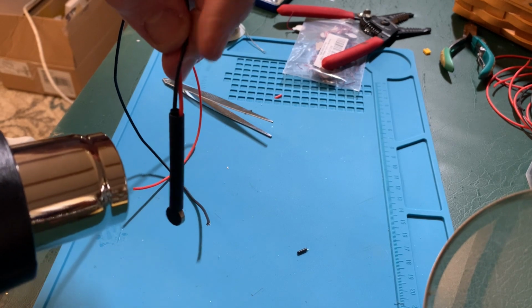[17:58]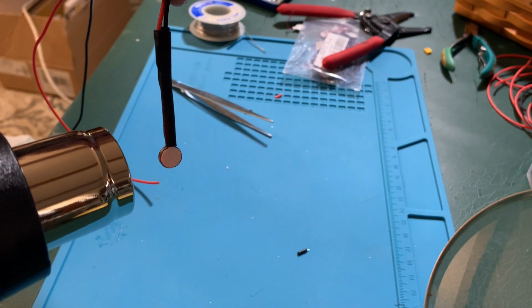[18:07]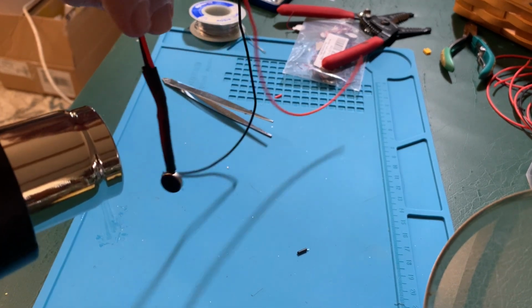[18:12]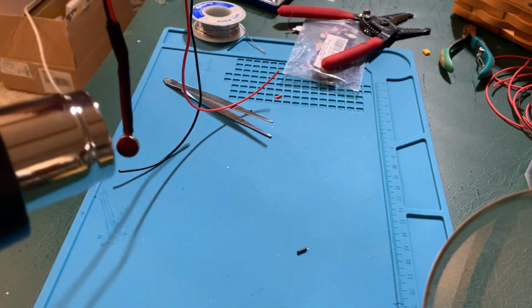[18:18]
So now I have the motor, I have it connected, red and black. This is just a standard hardware store heat gun. Watch what you're shooting past. I'm gonna heat shrink everything in my heat shrink case before I use it. And it will just shrink right down tight on the wire. See, it does not take long, it doesn't take a bit of heat, and you will see the heat shrink conforms nicely. And we have a nice finger, as I call them.
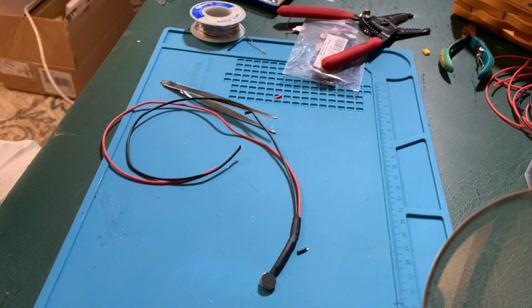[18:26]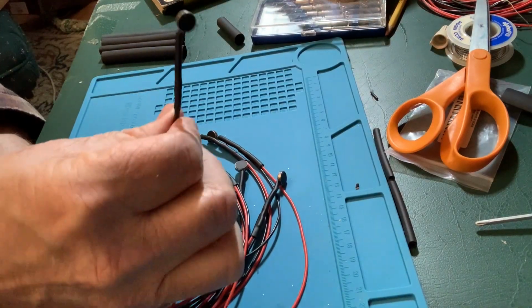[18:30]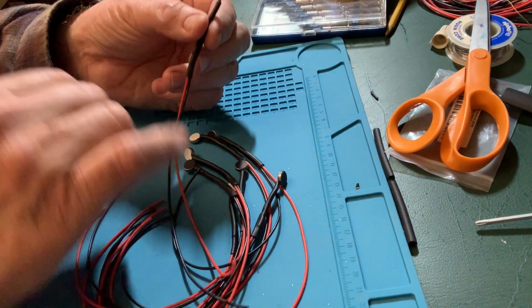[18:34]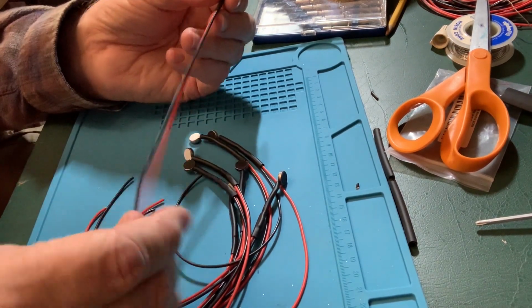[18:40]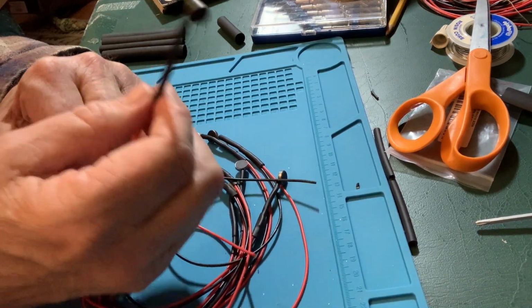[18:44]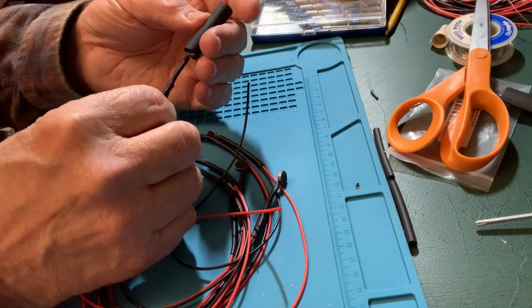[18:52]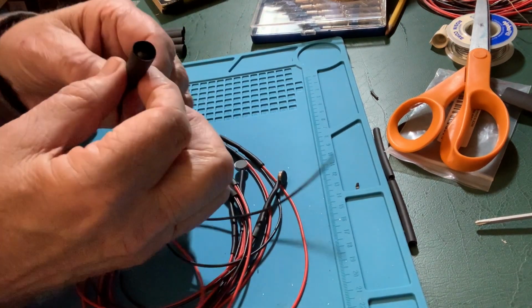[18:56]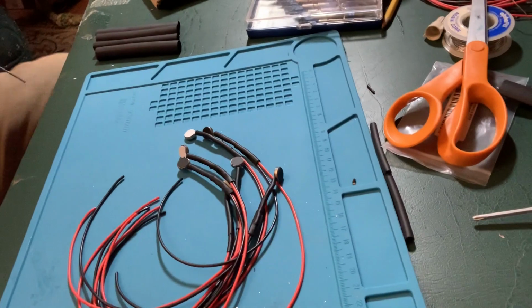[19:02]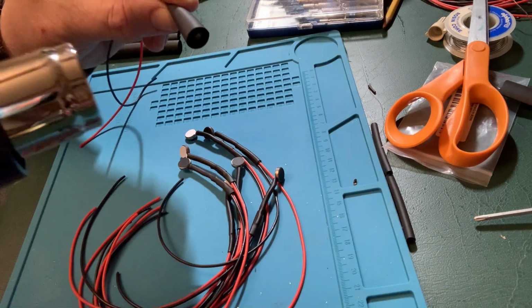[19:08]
Seven more. So now we have eight, I call these fingers, made. So this is an assembly with our piezo motor. Then the two heat shrink on it, red and black, positive and negative. Now the next step is not strictly required for the board, but I have added it as I'm working through some of the mechanics issues for gloves. So I take, this is a 3/8 inch heat shrink, and I put it over enough that the motor is slightly into it. What this allows me to do is to strengthen that connection of the motor into the heat shrink, or into the wire itself.
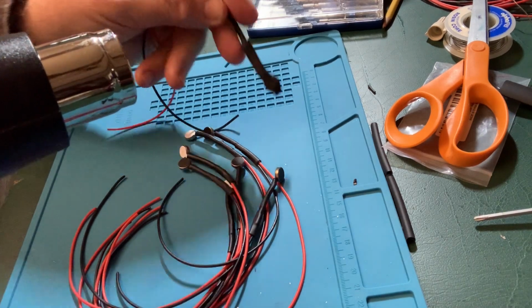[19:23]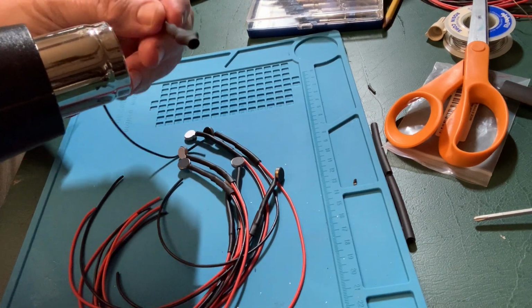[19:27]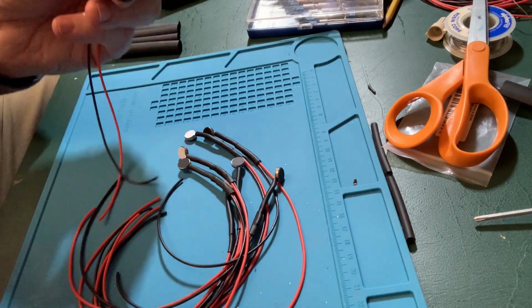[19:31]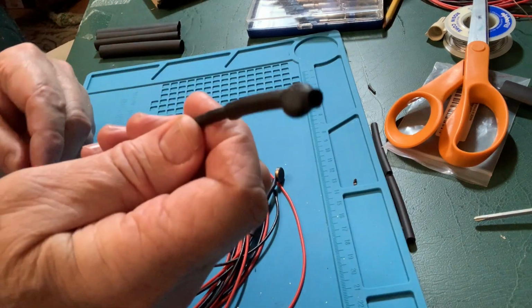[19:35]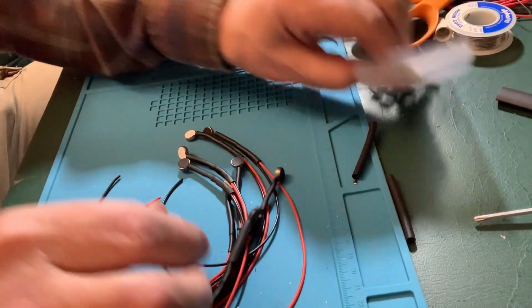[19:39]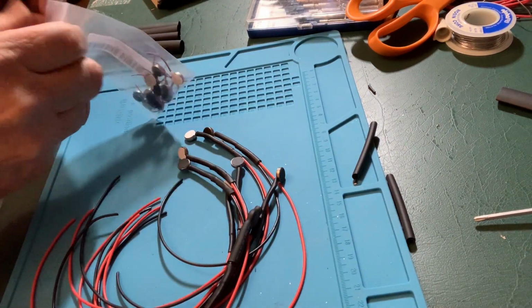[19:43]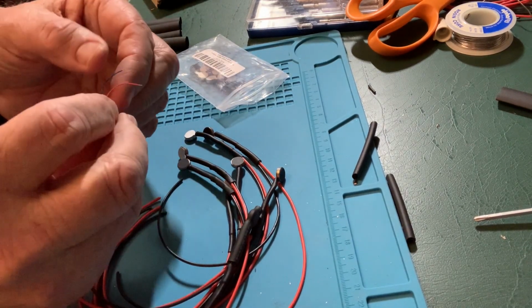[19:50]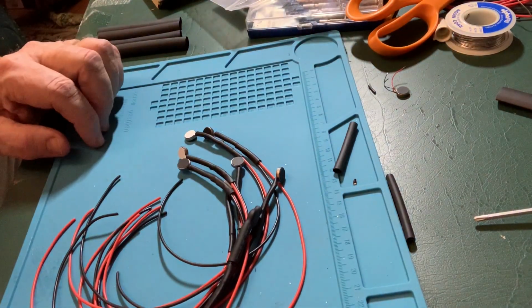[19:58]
So now I've got a completed and protected finger. Just as a reminder, we started with these little motors. These are the inexpensive ones from Amazon. The more expensive ones are slightly larger, but you see how small the wire connection is. And so that's what we're reinforcing with that. So I will heat shrink the other seven.
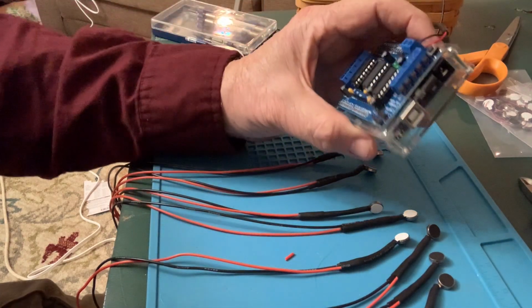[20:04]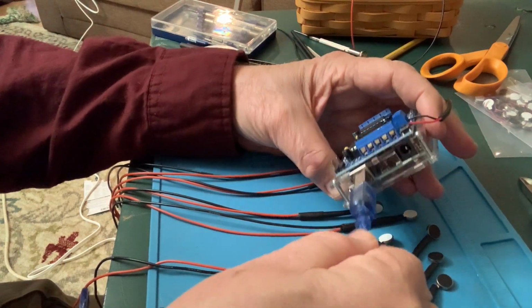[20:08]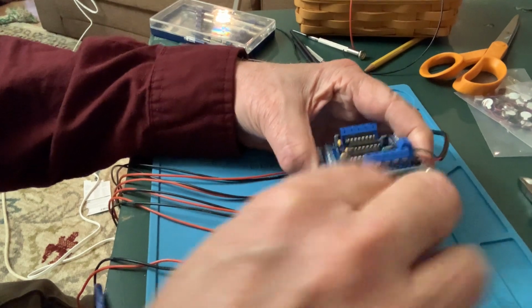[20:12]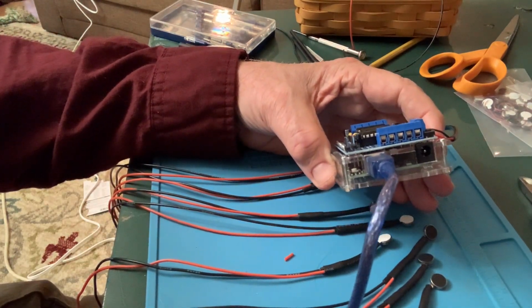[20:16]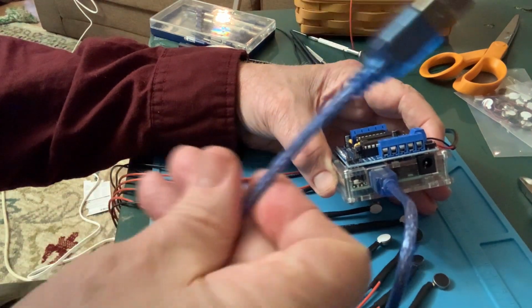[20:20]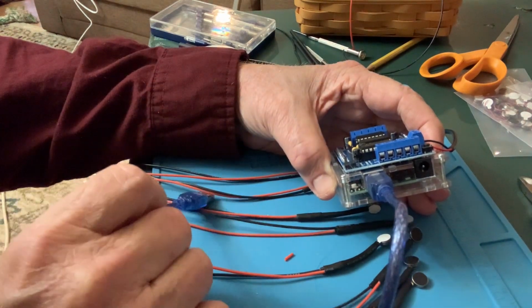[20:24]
It is time to program our Arduino. So we're going to take our Arduino and the cable, and we're going to plug the cable in. Just slides in like you were plugging it in a printer. And now we are going to go over to a computer and download the files that we need. We are not going to plug in the USB until we have the software installed on the computer.
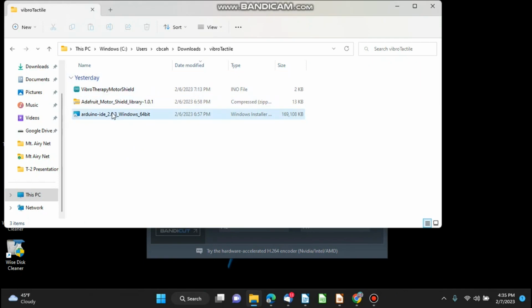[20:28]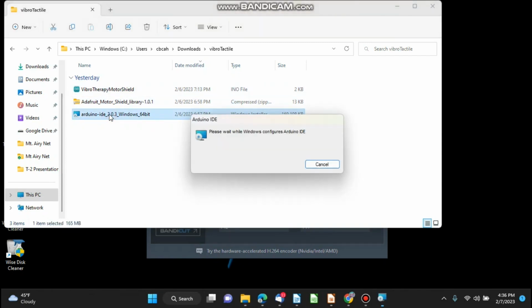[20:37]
So let's go. Okay, I've downloaded the files from the site. I brought the Arduino IDE for Windows, as well as the other two. We'll deal with those in a minute. I'm going to install the Arduino IDE. IDE stands for Integrated Development Environment. Don't let that put you off. It sounds like a whole lot more than it is. We're not going to use a lot of it.
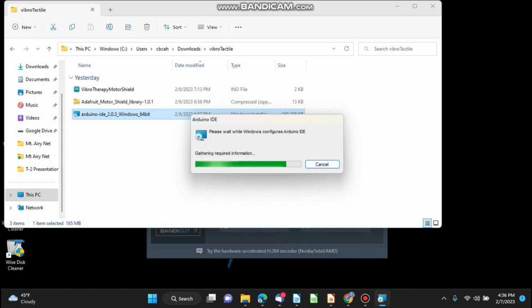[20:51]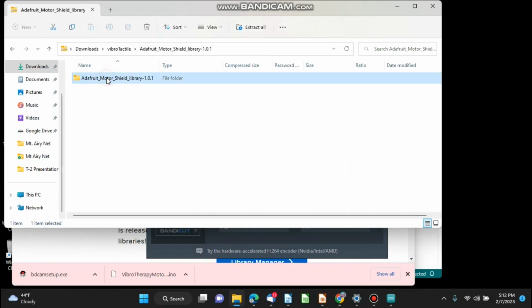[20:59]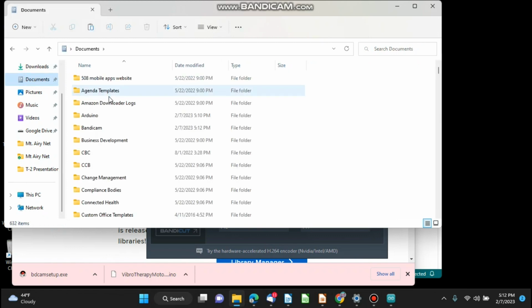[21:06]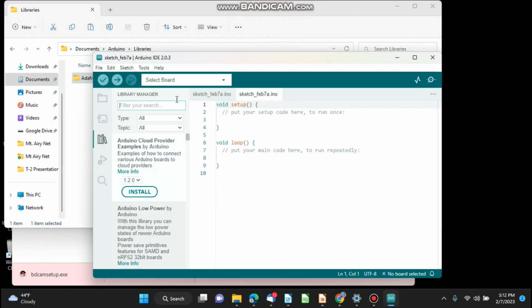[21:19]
So I'm going to take this Adafruit Motor Shield library that was in the zip. I am going to put it in Arduino, in that libraries directory that I created, and I'm going to paste it there. Okay, so now it's in the libraries, and then I am going to do a file, open.
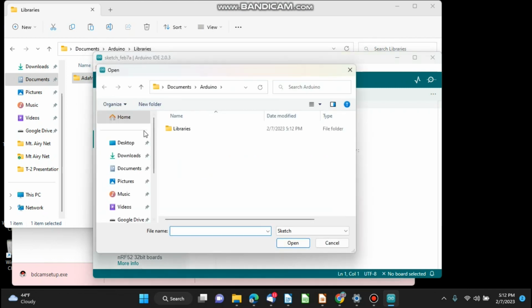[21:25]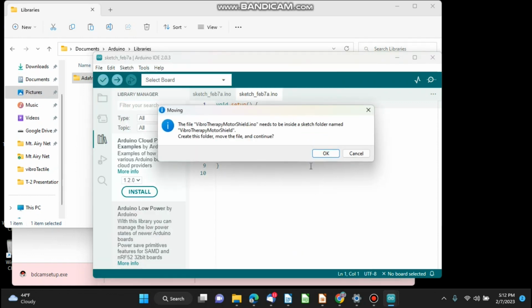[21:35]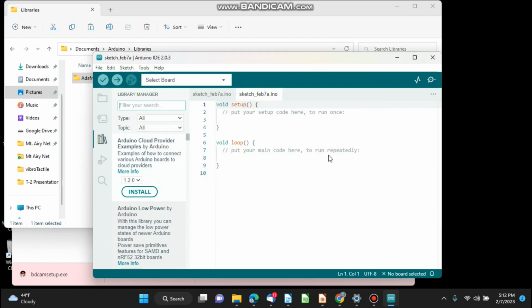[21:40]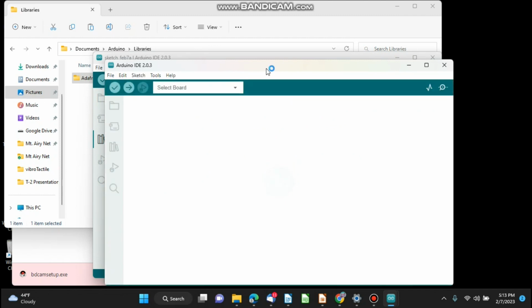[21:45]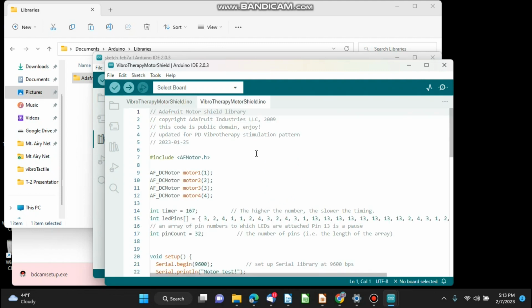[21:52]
I'm going to go to downloads. I put this in a vibrotactile folder, and I'm going to open the motor shield. I'm going to say okay, and it's going to open. This is the actual sketch that is going to run the Arduino. I am now going to plug the Arduino into the USB on the computer.
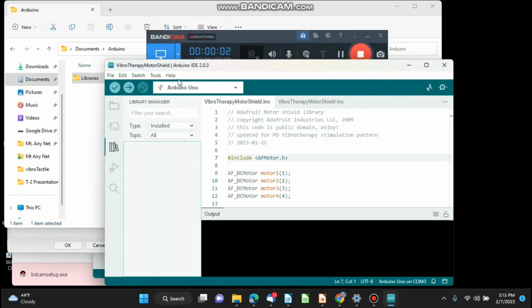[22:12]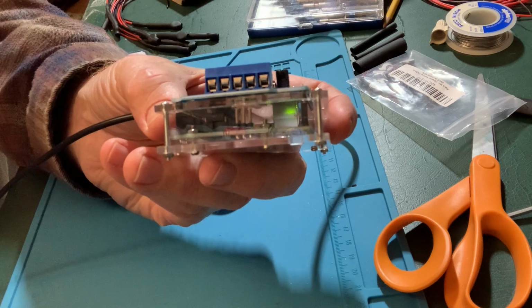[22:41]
Notice under Select Board, now it knows there's an Arduino Uno. So now I am going to upload the sketch. You'll notice first it compiles it, and then it's going to upload it into the Arduino. And so the sketch is loaded and is running. Now from this point forward, whenever power is applied to that Arduino, it's going to start running this sketch. So now we have a programmed Arduino.
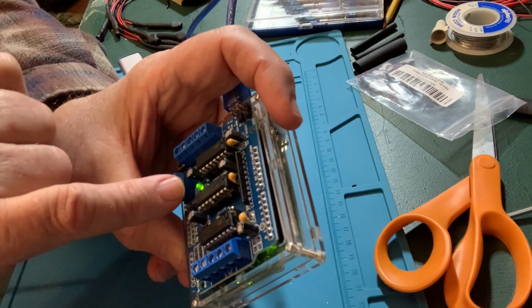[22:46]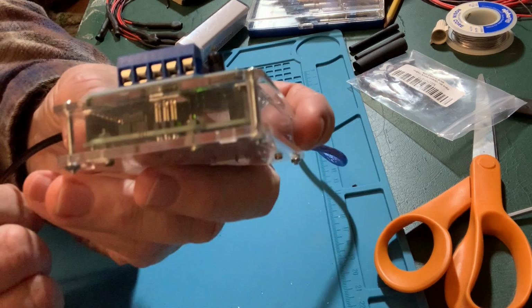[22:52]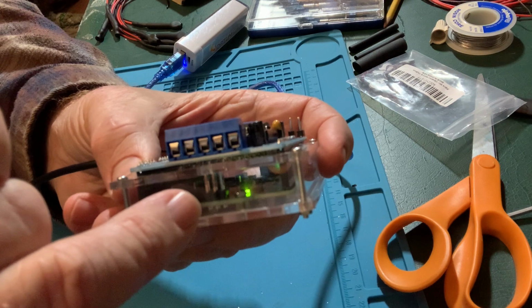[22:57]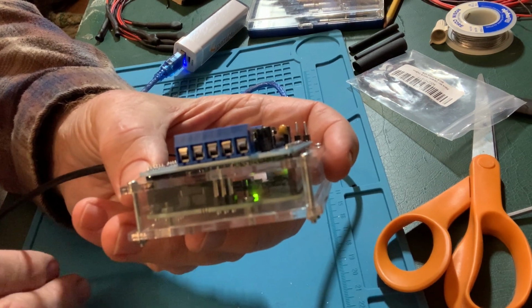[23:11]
We have a power light on top on the motor shield. So I've connected it to this little battery pack. It's a little hard to see, but inside you will see a green light that's on constantly, and then you'll see another that flashes periodically. And right there it is. I've added that flash to the program. It comes on during a pause in the vibration therapy that's built in. When you see that periodic flashing, you know that this thing is programmed properly. So as soon as power is applied, Arduino starts running its sketch, and it will run in a circle until you take power away.
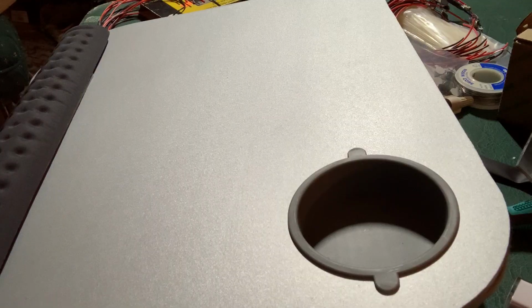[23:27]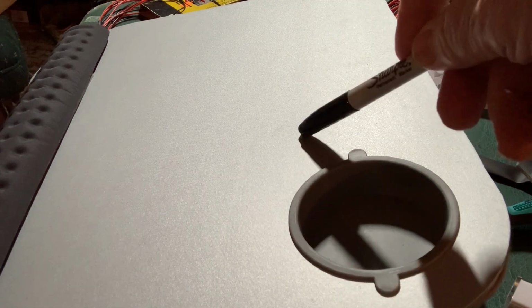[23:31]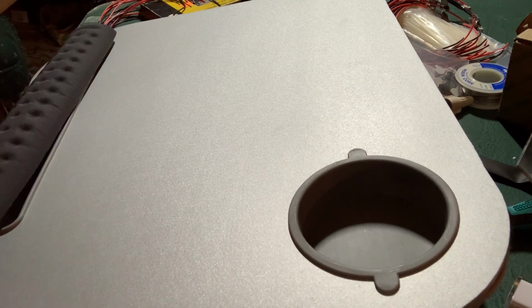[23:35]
So this is the standard lap board that I got off of Amazon. This is a wrist rest to make it a bit more comfortable. It's time to start putting this thing together. So your PD partner is going to spend, if you do what mine does, up to 2 hours a day on this. She does an hour in the first half of the day, an hour in the second half of the day. So being comfortable is important.
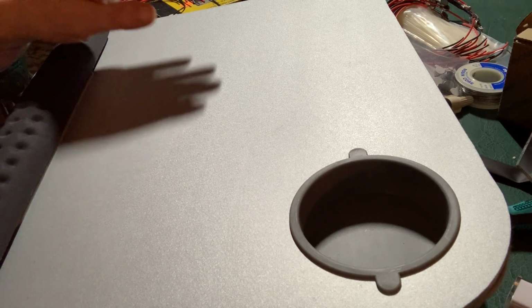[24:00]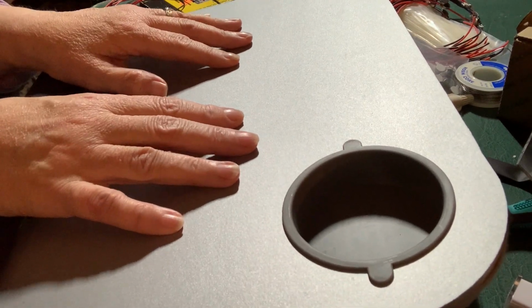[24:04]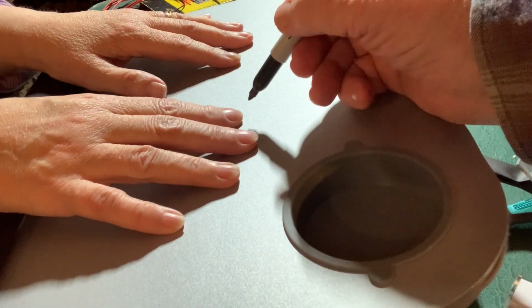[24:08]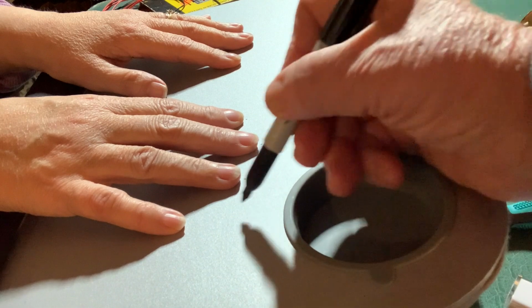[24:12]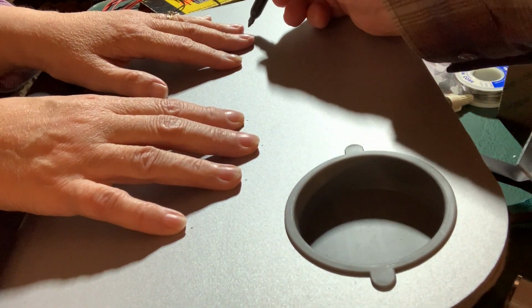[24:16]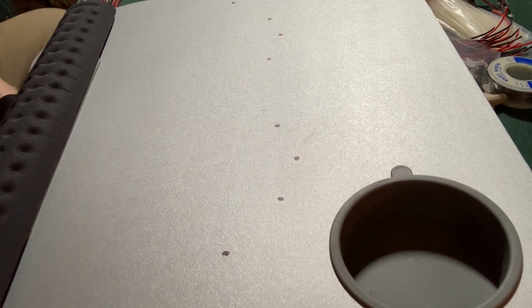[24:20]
So I have brought in my PD partner. Say hi, partner. Hi, partner. And you put your hands in a place that's going to be comfortable to rest them on the board. Thank you. Now, we're only doing the fingers, not the thumb. And I'm just going to put a dot and a dot and a dot and a dot. I've enhanced the dots a bit so you can see them easier.
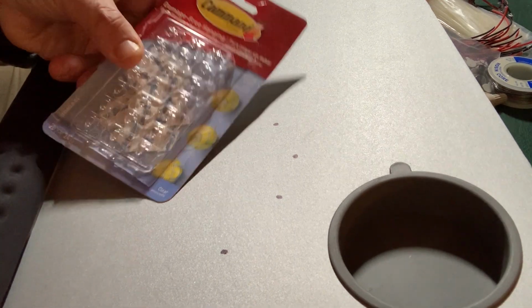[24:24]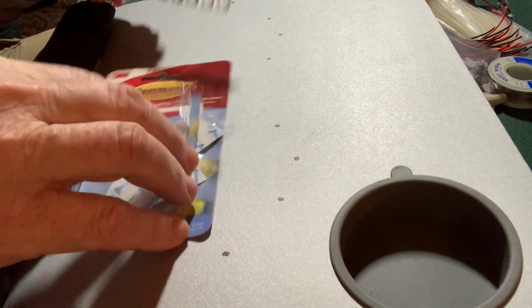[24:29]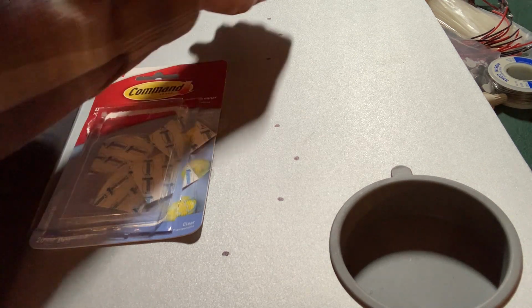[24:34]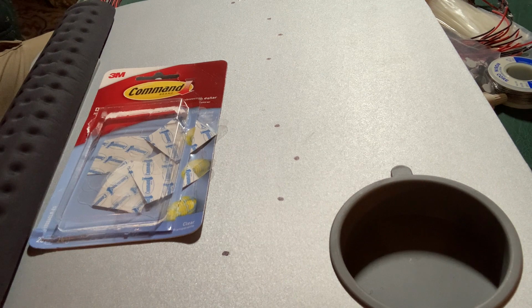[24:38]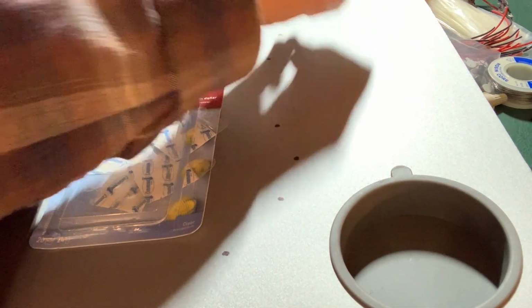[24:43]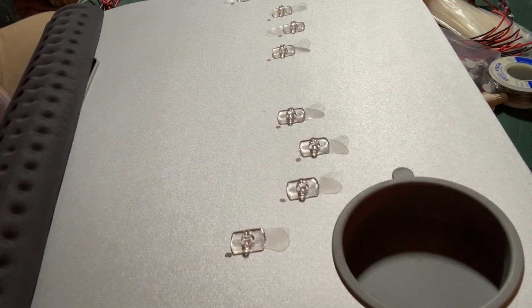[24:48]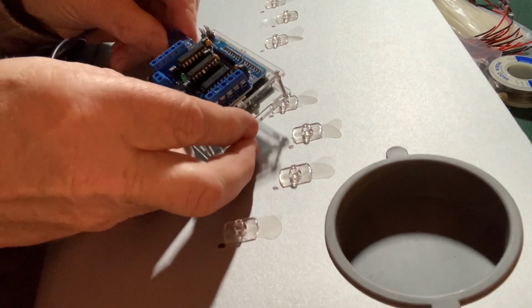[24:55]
Now I'm going to use these Command decorating tabs, and I am going to put one of these right above and just beside each of the dots. And then I'm going to use a cable tie to connect the fingers to these so they stay in place. So I've placed the 8 Command strips at each of the finger positions, and now we're going to put together our final unit here.
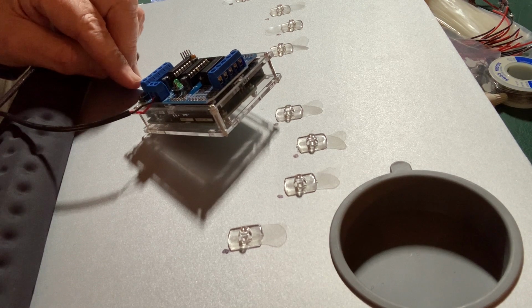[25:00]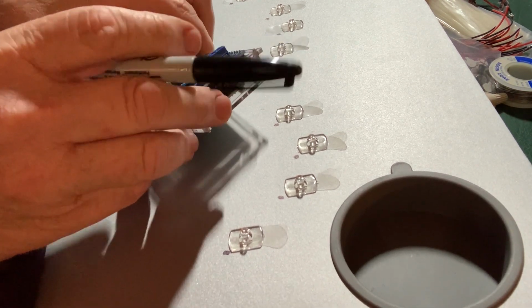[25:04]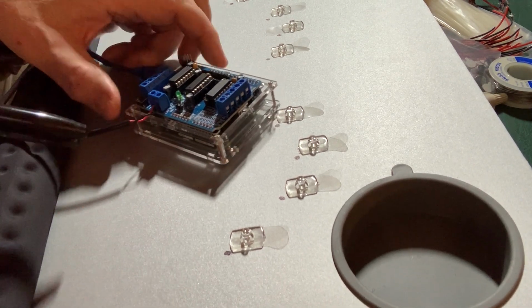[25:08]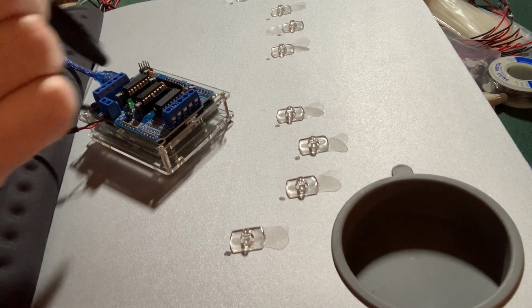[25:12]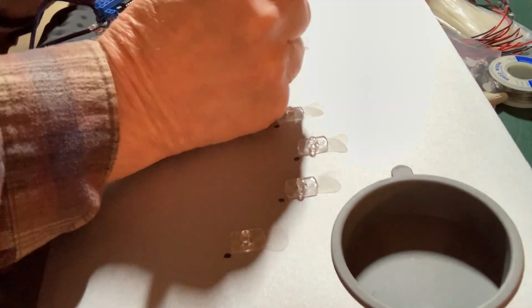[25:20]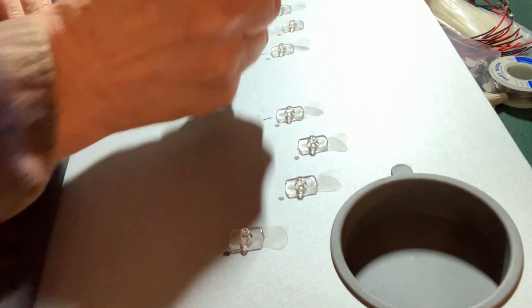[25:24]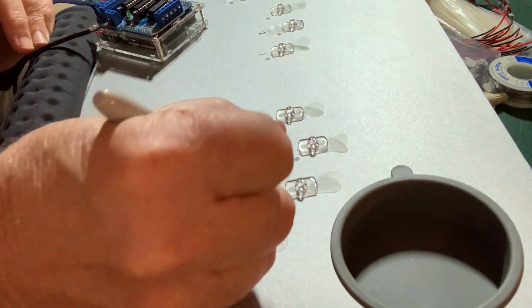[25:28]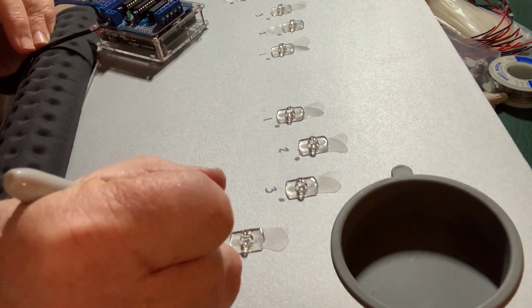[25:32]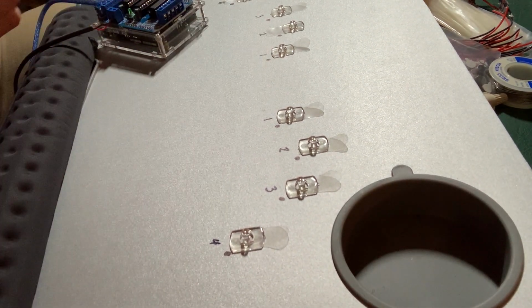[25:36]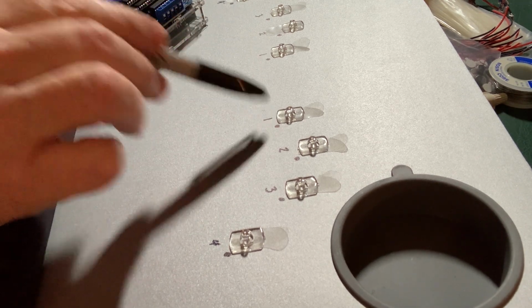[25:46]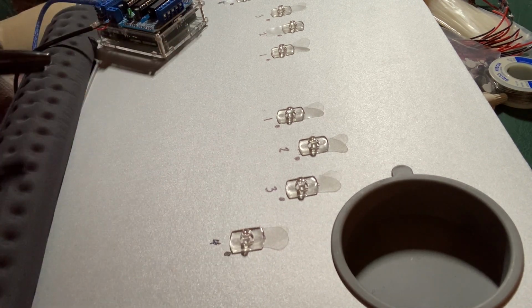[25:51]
As you recall, we have four different motors that are controlled by the motor shield, okay? M1, 2, 3, and 4. So we're going to do red and black, red and black, red and black. One is going to drive finger one, and finger one is going to be finger one here and finger one here. Two will be two and two. Three will be three and three. And four will be four and four. And the program is such that it follows the Stanford pattern, so you want to have these mapped. So we will take two of the fingers and connect them into one. Two of the fingers to two, two to three, and two to four.
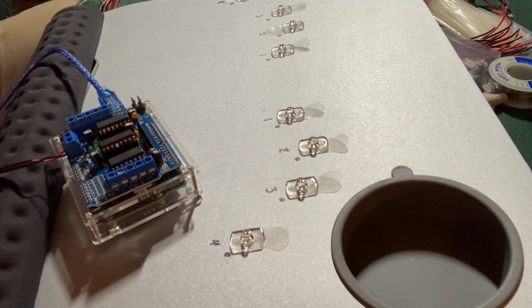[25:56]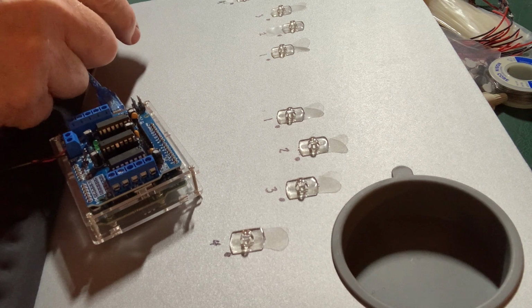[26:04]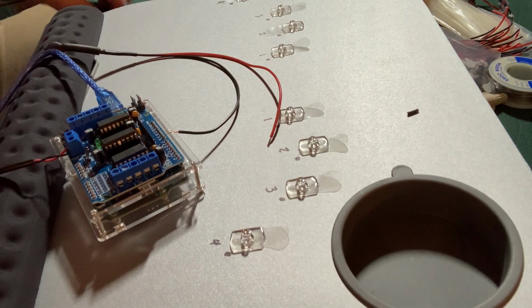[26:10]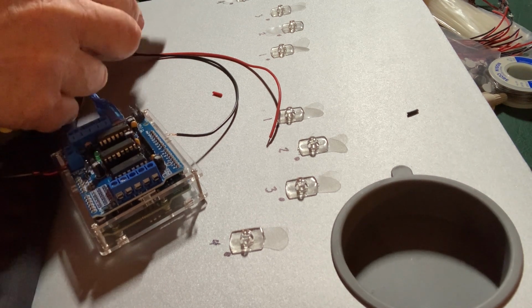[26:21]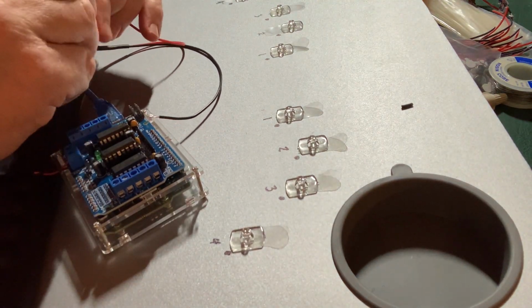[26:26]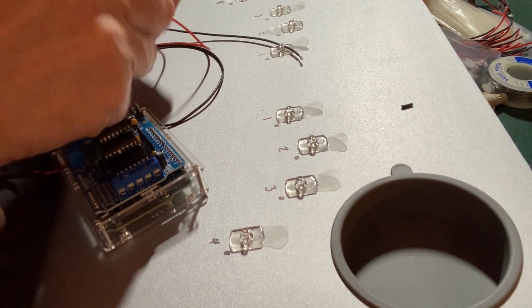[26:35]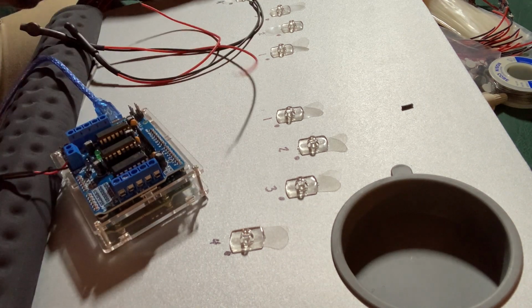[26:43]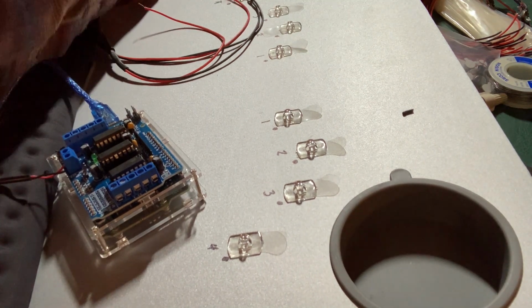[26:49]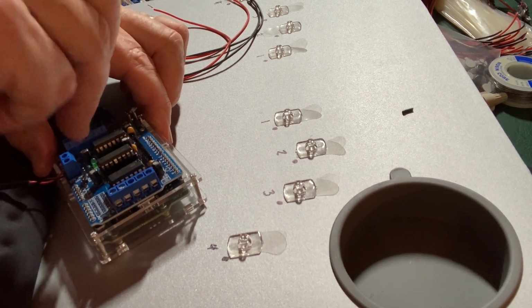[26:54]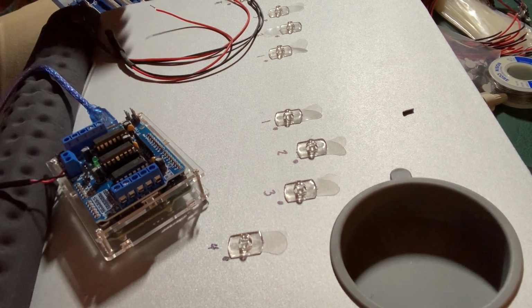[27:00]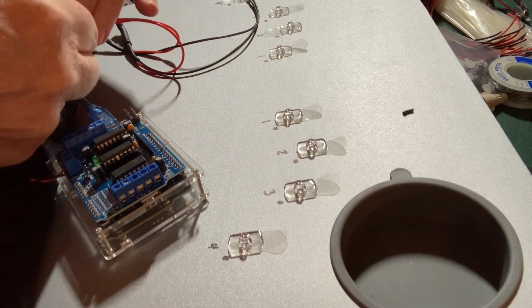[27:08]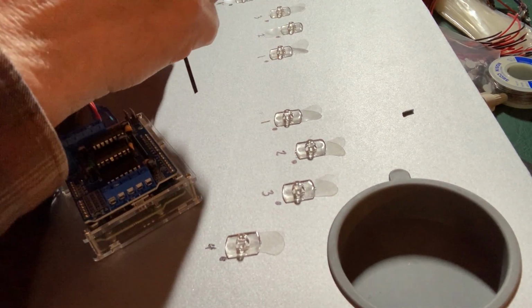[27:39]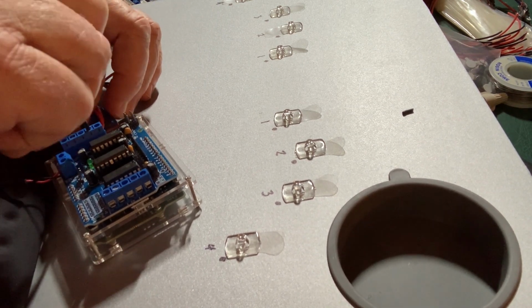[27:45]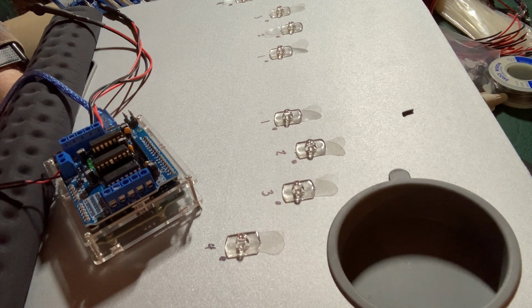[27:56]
So, next step, need the wire strippers. And we'll just strip red and black on one. We will strip red and black on another. Match those lengths up. So I keep red to red and black to black. I twist them together before I insert, just because it makes it easier to get it in. And now I'm going to back off the screw for motor one. Two red together for one, our two black together for one, and then we have our first two fingers, one on left and one on right connected.
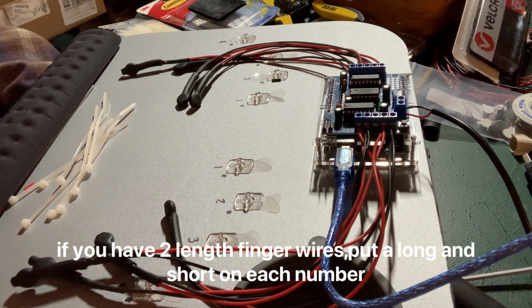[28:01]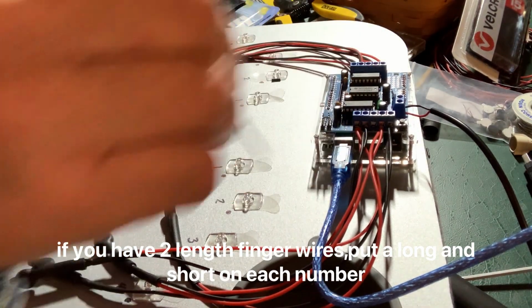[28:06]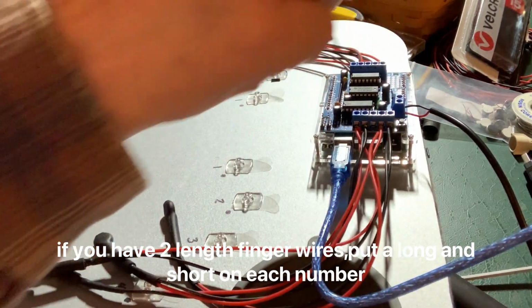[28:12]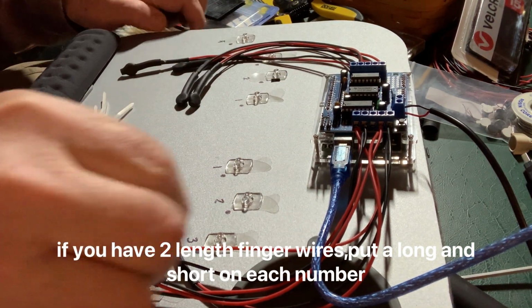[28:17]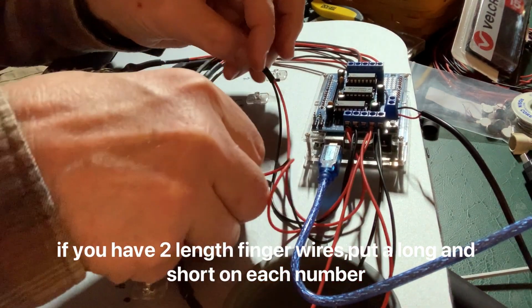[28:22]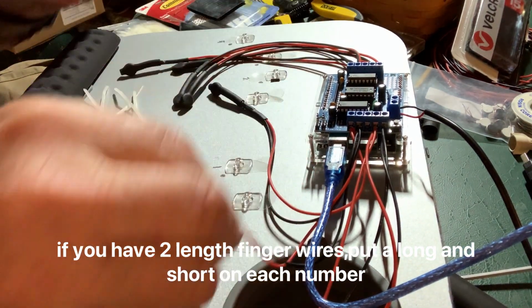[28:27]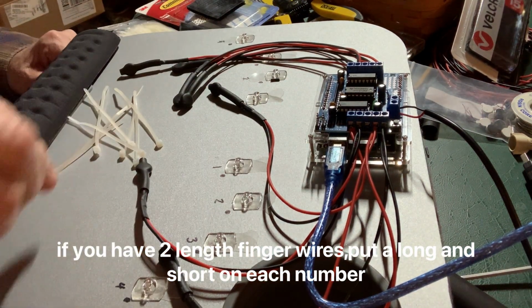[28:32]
Now I'll do the other three. So I've connected to all of my terminal blocks. So I have two motors to one, two motors to two, two to three, and two to four. Now I'm going to distribute those across. So I'm going to take both of my connections to one, and I'm going to put one on left hand, one on right hand, okay? And then I'm going to do the same for two, three, and four. I'm also going to use cable ties to hold them in place.
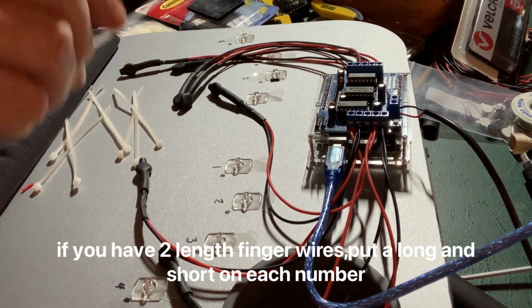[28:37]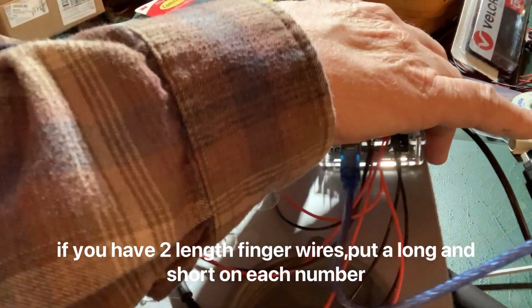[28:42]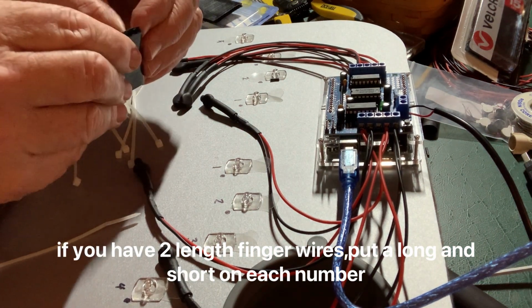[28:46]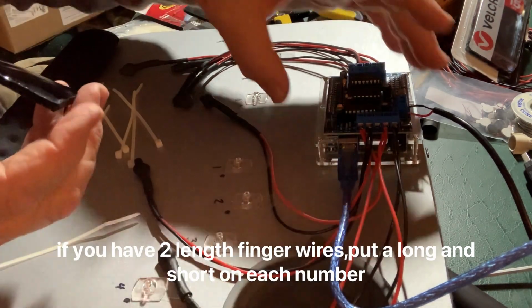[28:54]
And while I'm at it, once I get the wires run, I'm going to put a little Command strip here in the center. Now, before I do that, I like to anchor my Arduino. And I do that with self-adhesive two-sided Velcro. So it's a peel and stick. I'm just going to stick it to the bottom.
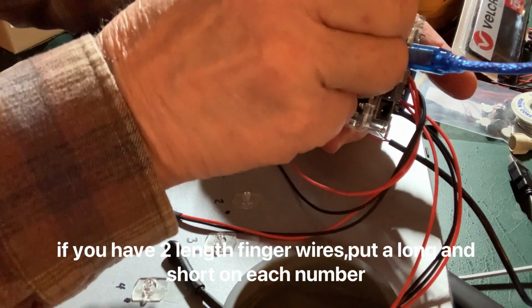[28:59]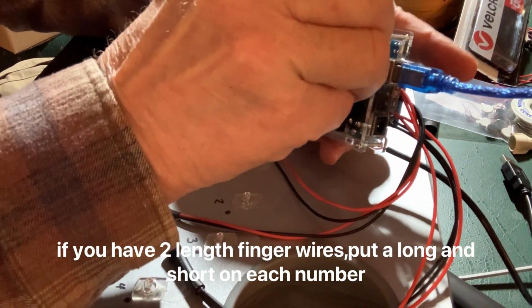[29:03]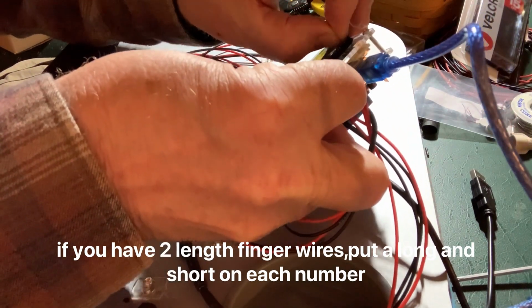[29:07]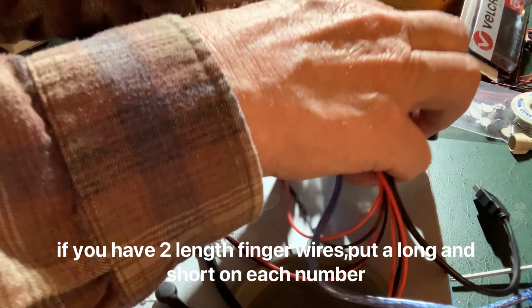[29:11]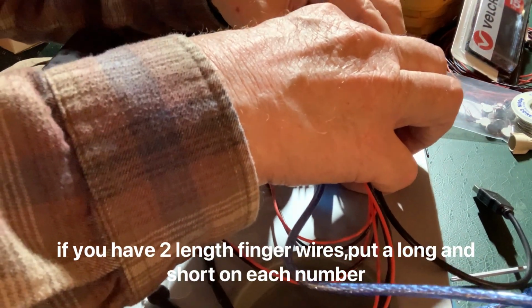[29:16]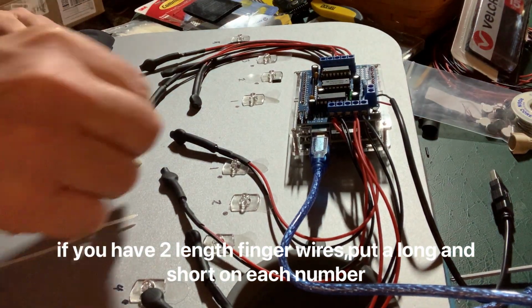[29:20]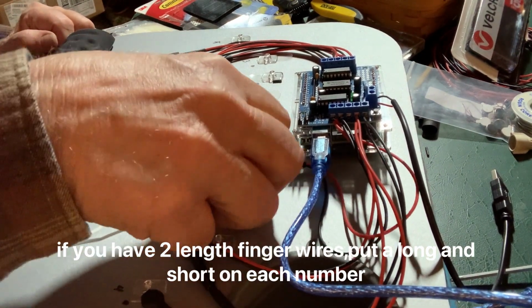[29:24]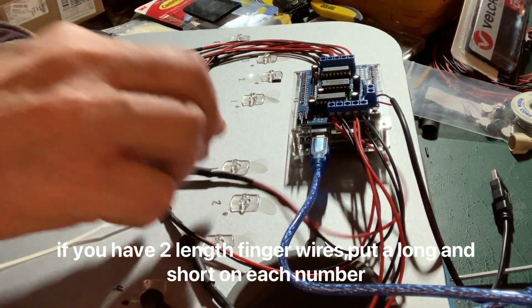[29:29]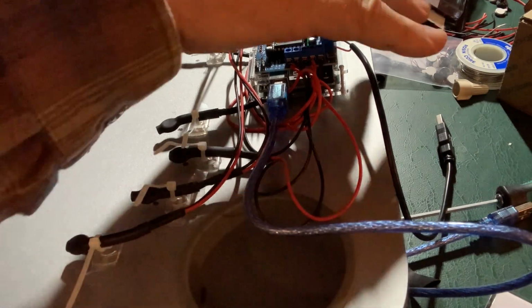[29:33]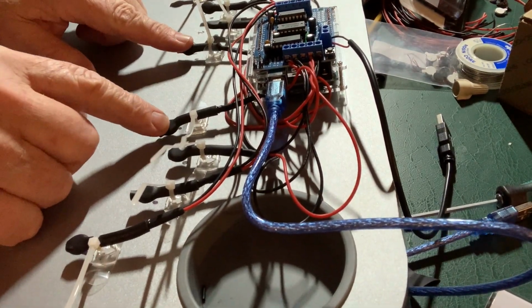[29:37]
I like to position the Arduino someplace central because, again, you're distributing all of your fingers to both sides. So that's connected. And now I'm just going to put each of my fingers, I'm actually going to go just below the dots that my partner gave me. So I've attached my Arduino. I've run my wires, so one and one, two and two, three and three, four and four.
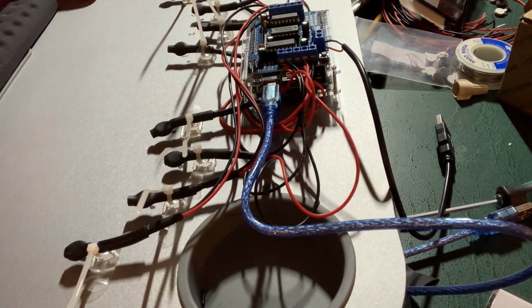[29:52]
Following the Stanford model, based upon the publication, it's quite important that stays. So I often tell my PD partner, she's not a science experiment, we're trying to accomplish something here, so it's very, very important. We let the scientists do the science and I'll just do the mechanics. I am going to trim these cable ties just to tidy things up, and we will power it up and see what we've got.
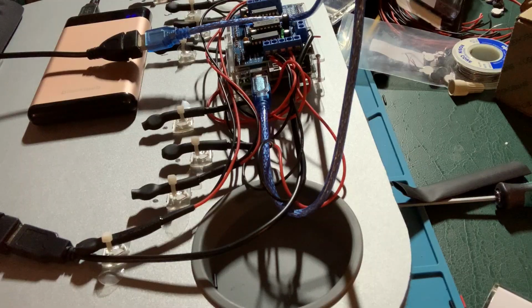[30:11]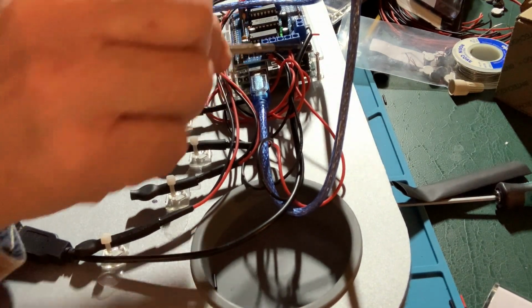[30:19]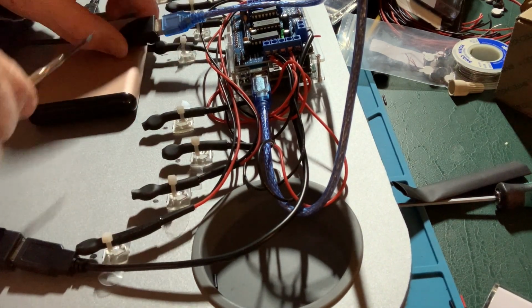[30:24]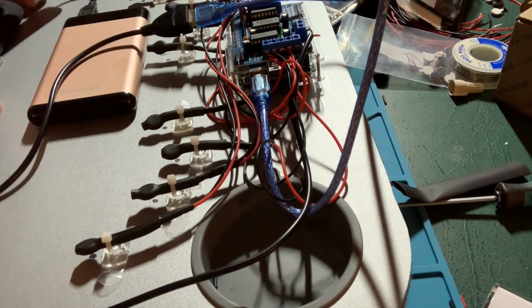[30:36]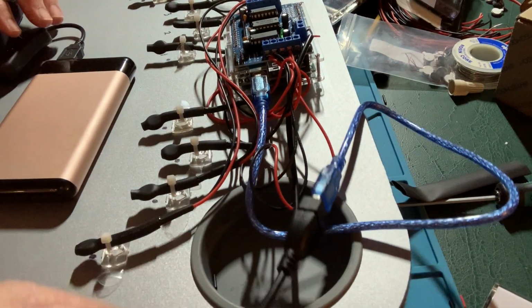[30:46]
So I have connected my power points. If you recall, we have a separate power that powers the motor shield from the one that powers the Arduino. Now, this is a personal preference, but I have put in a Y cable that allows those two powers to come to a single plug, and I put a switch in, and the switch allows me to have a single place that I am able to turn the board on and off.
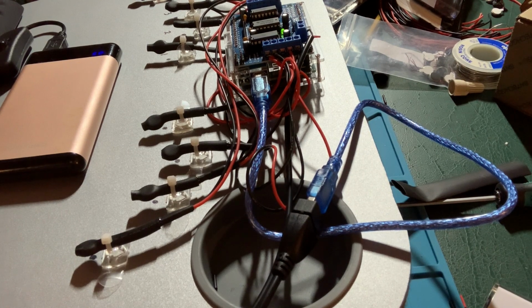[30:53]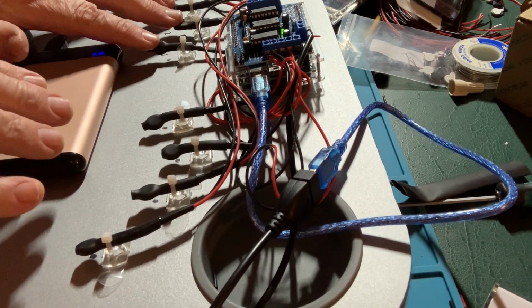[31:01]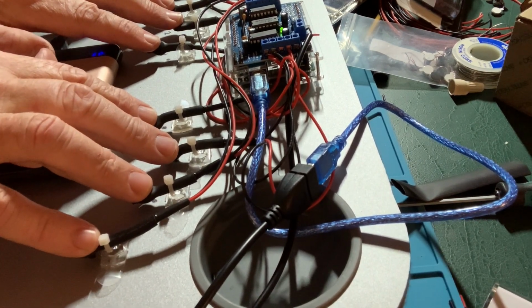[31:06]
So moving wires to the side, once we apply power, and if you listen carefully, you will hear why we call it a buzz board. To use this, you place fingers 1, 2, 3, and 4. My hands aren't the size of my partner's. And just rest fingertips on there. And that is the basis of my interpretation of the vibrotactile technology.
The pattern and frequency being used, the period being used, matches up with the paper. I did use the less expensive motors in this particular build. So these are 12,000 RPM motors, whereas to match perfectly with the Stanford paper, you would go with the 15,000 RPM. Look at the inventory sheet below and you will see.
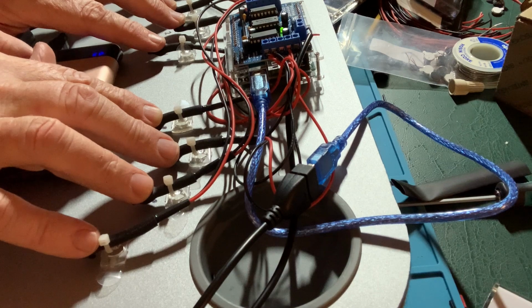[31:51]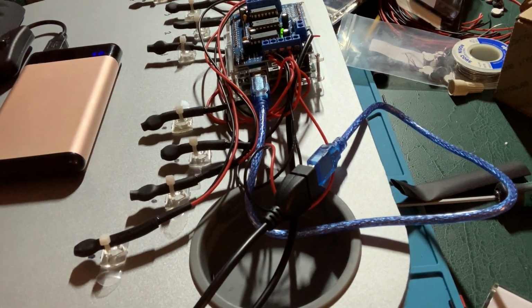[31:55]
A couple of final thoughts. First is, do not skimp on the power pack. You can run the motors through the power. Remember, we took that jumper off initially for power, and you can have it all run through the Arduino. The motors will vibrate. They don't vibrate very strongly. Do not skimp on the power pack. You can run this on a power pack with some AAA batteries.
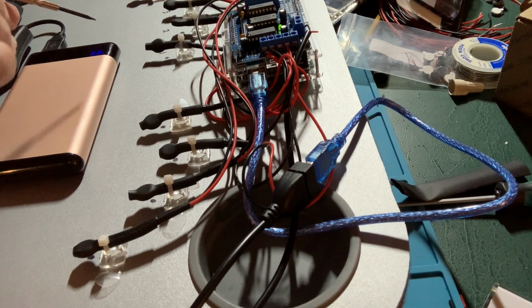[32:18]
It will run. However, and this is probably the hardest thing I've gone through in this journey, the first one of these that I built, which is several iterations before this design, I overvolted the motors, and after about 2 weeks of operation, they didn't quit, but they started to fail. What they did is they were not vibrating as strongly. My PD partner told me, and I checked some voltages and everything looked fine. Within a couple of days, I started seeing the benefit that we found from this fade away. So don't skimp on your power.
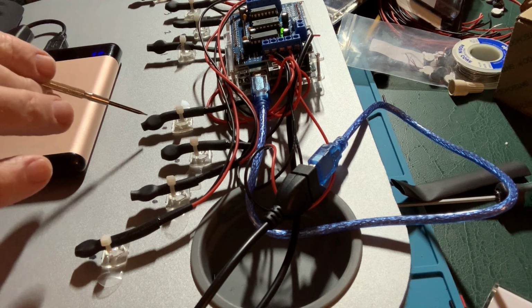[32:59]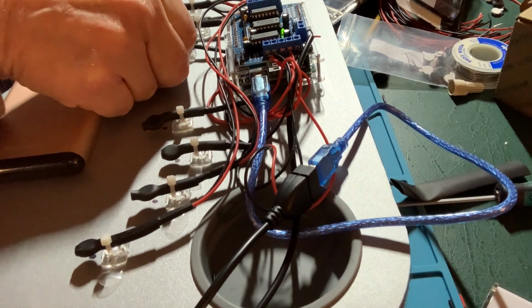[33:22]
I have had these motors fail, not a lot. Usually when they fail, it's because I tear them up trying to make a glove, which we'll talk about in a minute. But if your partner says one of these isn't working or it doesn't feel like it's vibrating as strongly as it was, pay attention. Watching them backslide, if you get the benefit that we did, is a really hard thing. So that is putting together a buzz board.
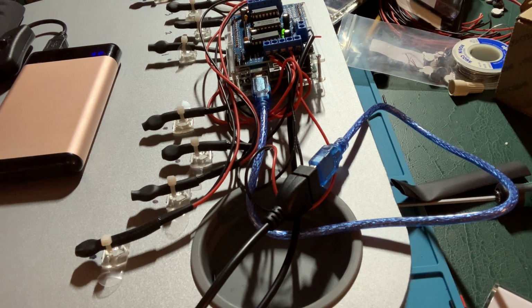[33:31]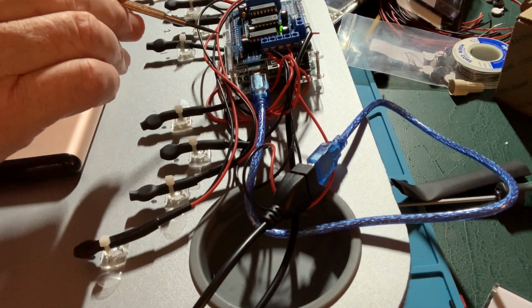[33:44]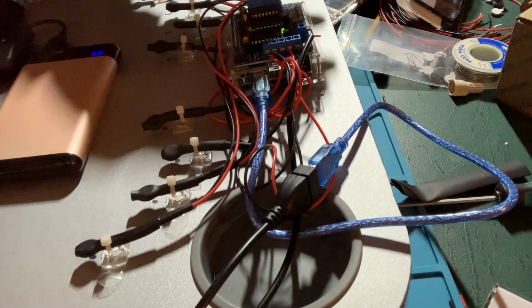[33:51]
If there is interest, I can put together a video of how to make this same device into a glove. I can also walk through what I'm working on, which is a much smaller and less expensive version of this. I have put together a pair of gloves where the control pack is about this size, just to this area, and rides on the wrist. So they're two independent gloves. They're not connected, a right and a left, and I'm happy to put up the video for those if there's interest.
As I mentioned, and I'll reiterate, no warranty expressed or implied. Your mileage may vary. We have had really great success with this, seen a tremendous impact. I hope someone out there has benefit as well. If you find this build to be challenging, and I've specifically put this together to minimize soldering and be as simple as possible, any high school or community college that has a robotics program can easily assemble this.